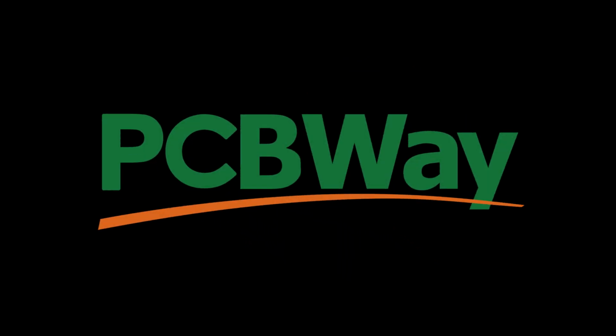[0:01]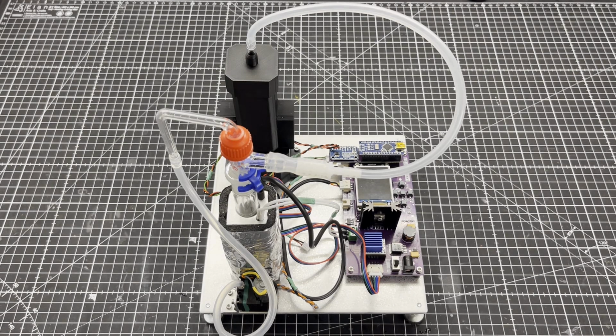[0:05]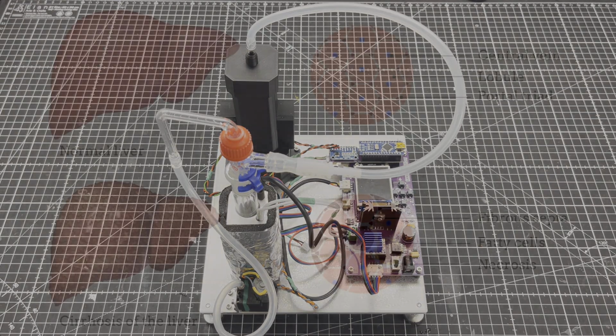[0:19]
And this is a fully automated microlab to determine the ammonia concentration in blood or urine. I built it because my blood has to be tested regularly for ammonia. The reason for this is that I suffer from cirrhosis of the liver. My health insurance only pays for the ammonia test once a year, which is far too little. I can't change my health insurance either, as no other insurance company would accept me with my medical conditions.
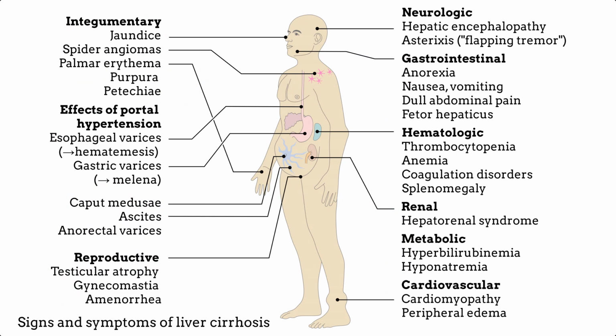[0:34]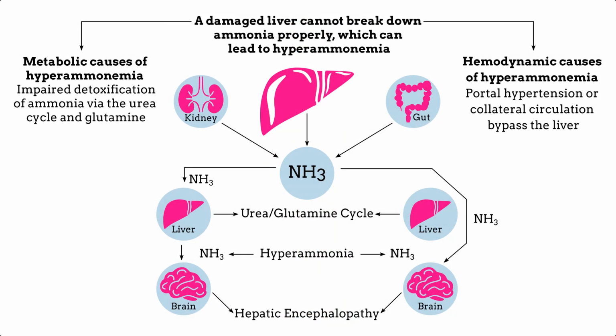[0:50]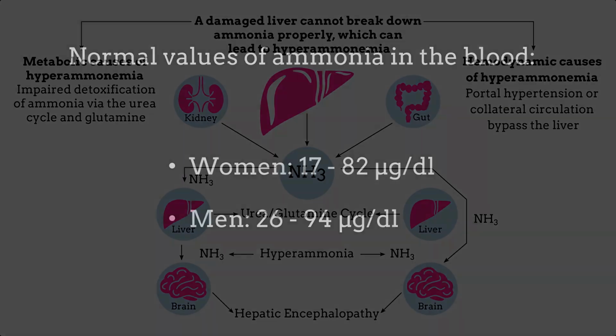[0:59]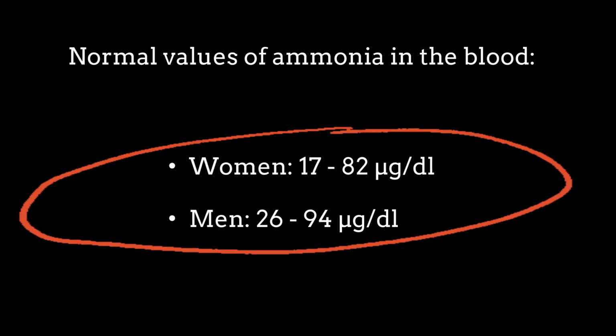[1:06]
Liver cirrhosis causes many symptoms, but the most acute for me is hepatic encephalopathy, also known as liver brain disorder. It's a potentially irreversible brain dysfunction caused by an insufficient detoxification function of the liver. In other words, with liver cirrhosis, the human body becomes increasingly poisoned with ammonia, a highly toxic cell toxin. Ammonia is also always present in the blood of a healthy human body, although the concentration is much lower.
If the ammonia content of the urine is increased, the reason may be liver damage, but it may also be an indication of a kidney damage or a bacterial urinary tract infection.
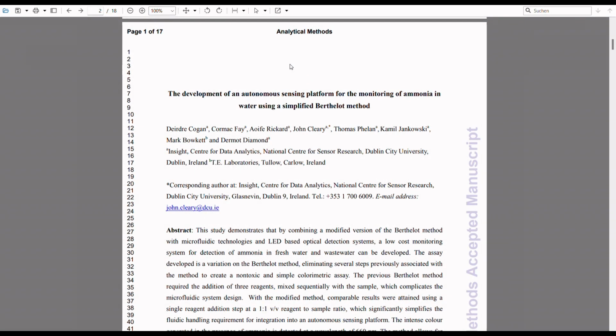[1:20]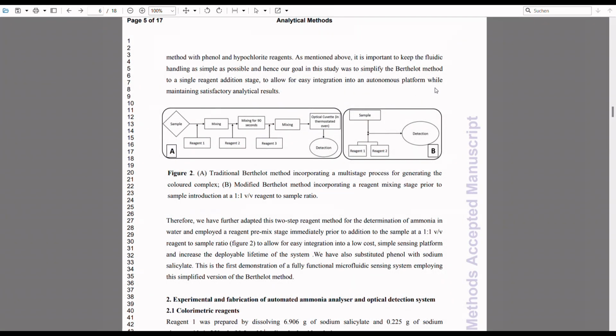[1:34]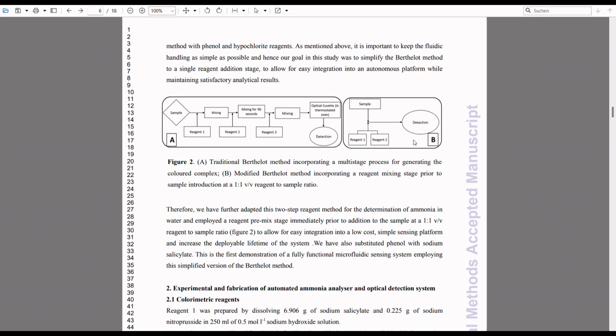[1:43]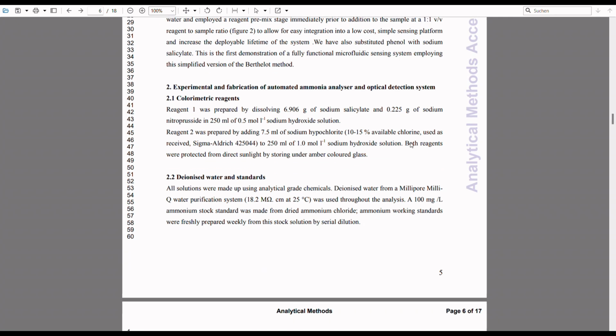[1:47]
The first thing I did was look around for a highly sensitive colorimetric reagent for ammonia and came across the Berthelot method. This publicly available paper was extremely helpful. In the paper, sodium salicylate is used as the phenol source instead of the highly toxic phenol itself, and the Berthelot reagent consists only of two reagents instead of three, which are simply mixed in a 1-to-1 ratio before use.
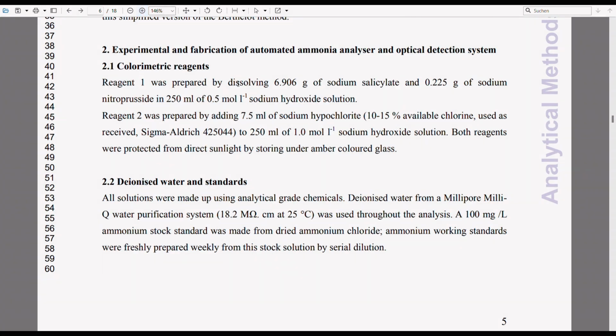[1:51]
The reaction mechanism of the Berthelot's reagent as prepared in the paper looks like this. I will refrain from a detailed description of the mechanism here and refer to the paper. However, another important hint emerged from the paper, namely that the absorption maximum is at 660 nanometers, arising from the use of salicylate rather than phenol.
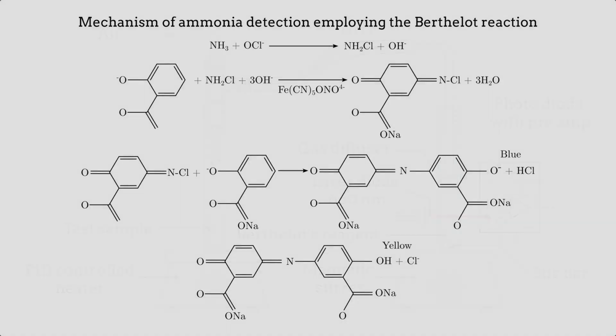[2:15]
Once all that was sorted out, I drew a sketch of the general structure of the microlab. You can see here that the ammonia is expelled from the test sample using mild heat, and that the test sample does not come in direct contact with the Berthelot's reagent. This is important because the Berthelot's reagent is also very sensitive to urea, which is always present in both urine and blood.
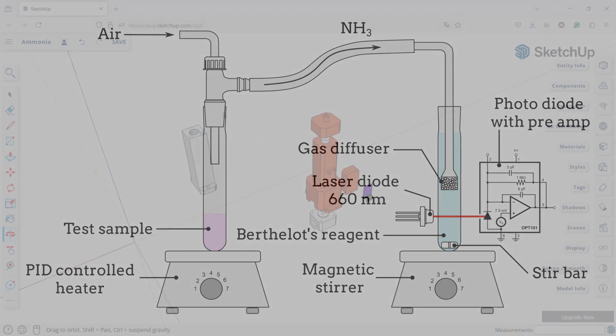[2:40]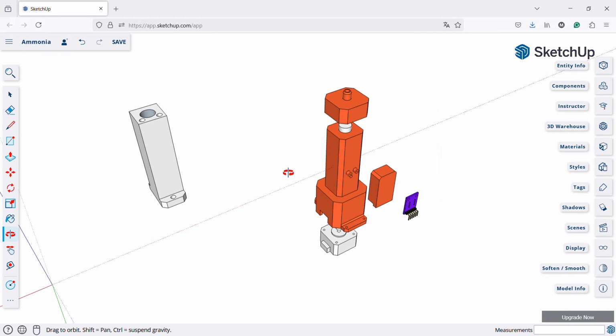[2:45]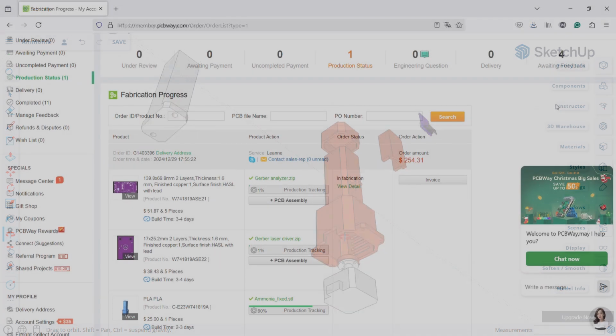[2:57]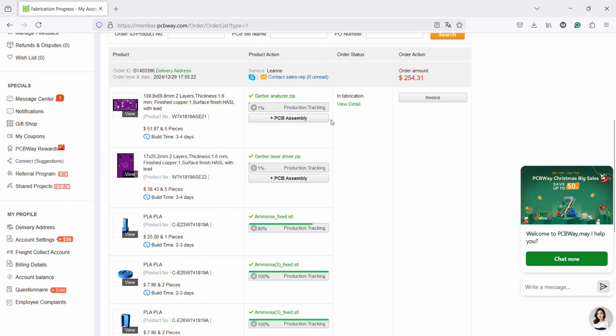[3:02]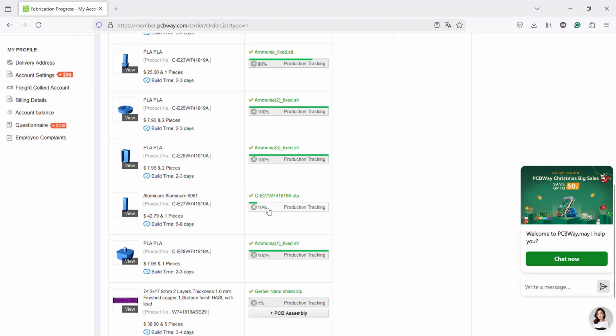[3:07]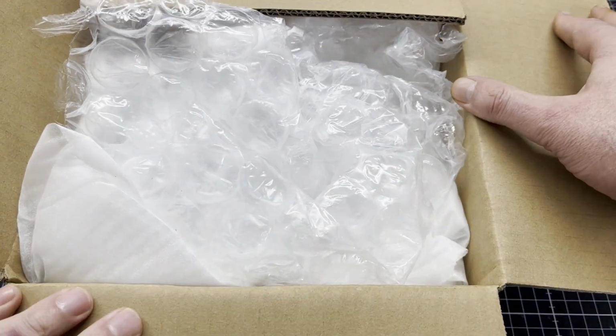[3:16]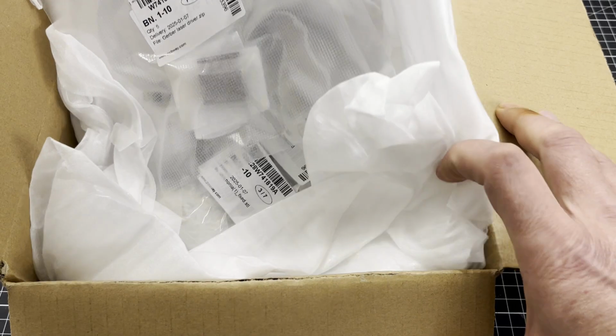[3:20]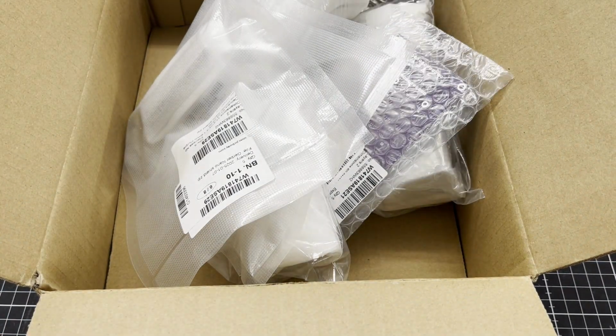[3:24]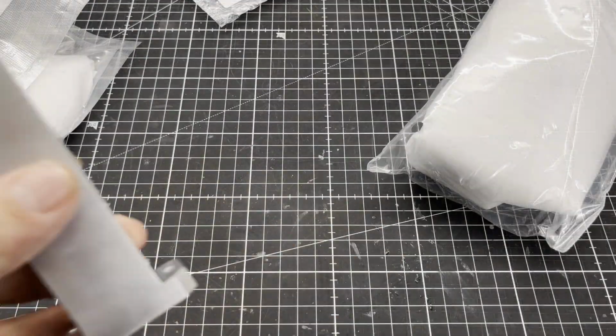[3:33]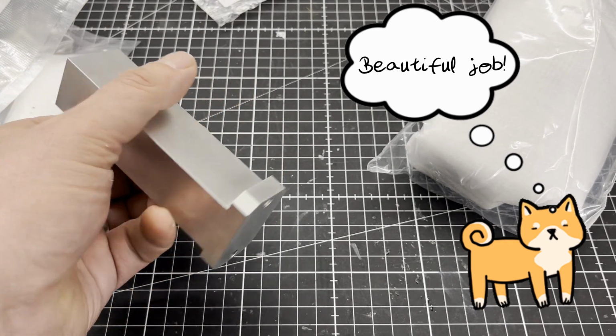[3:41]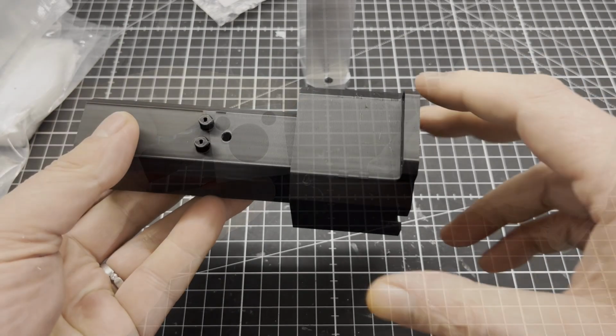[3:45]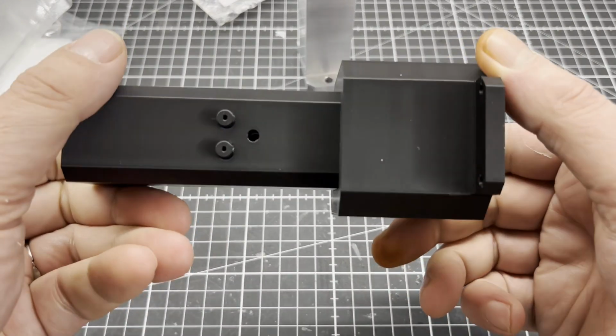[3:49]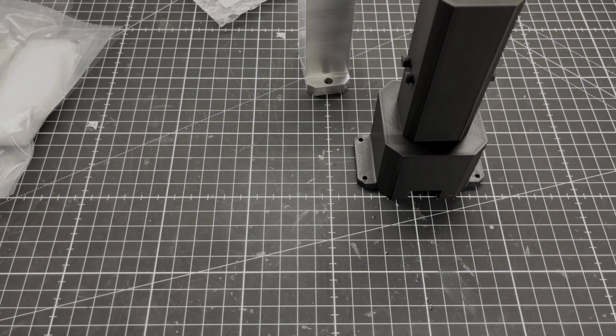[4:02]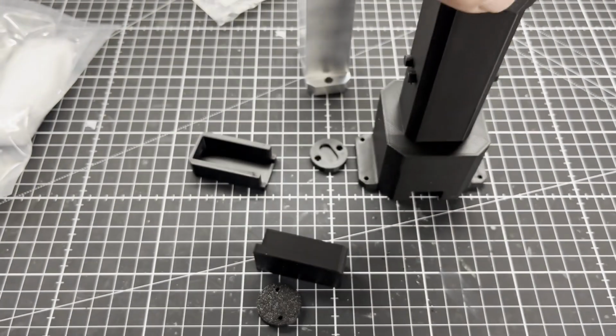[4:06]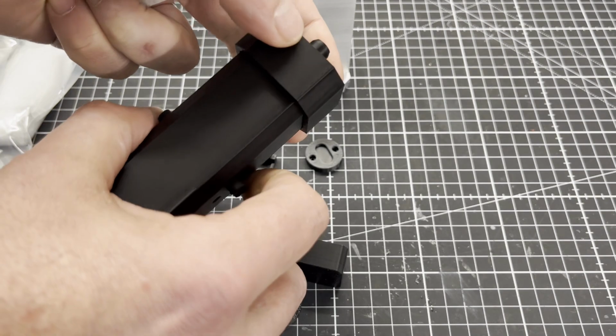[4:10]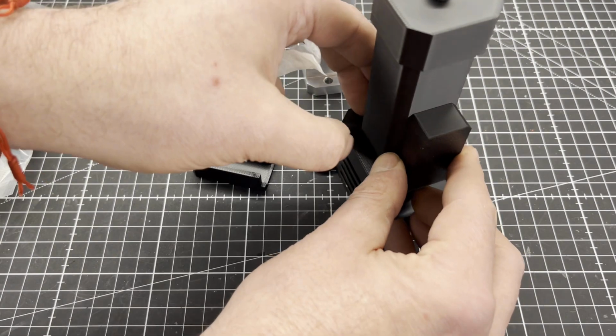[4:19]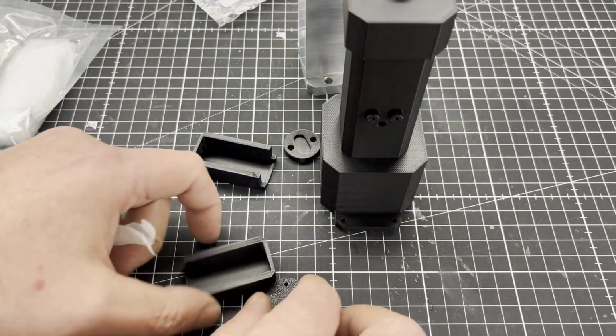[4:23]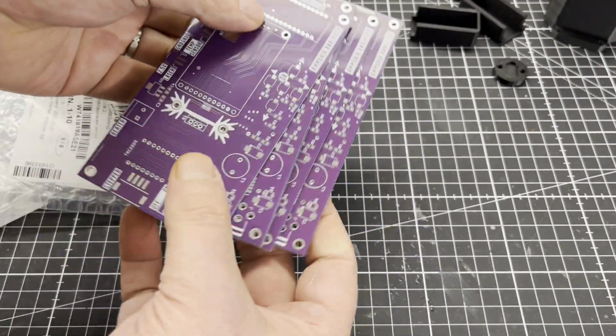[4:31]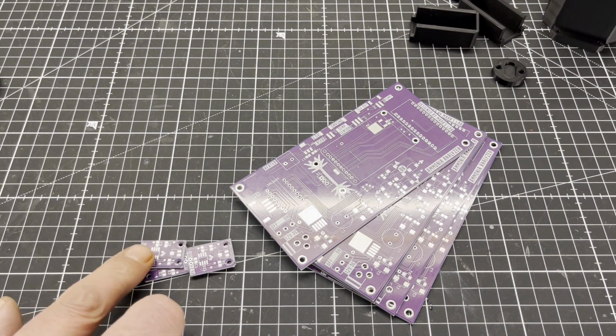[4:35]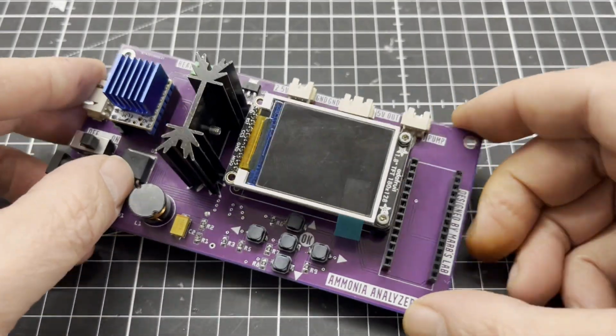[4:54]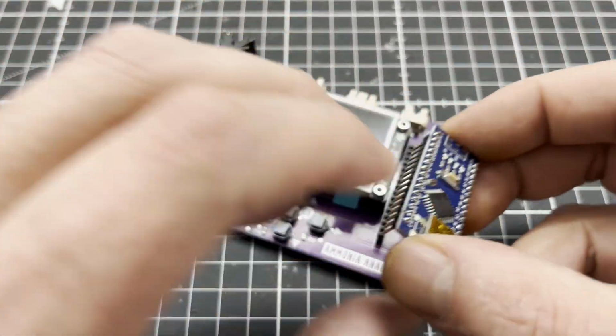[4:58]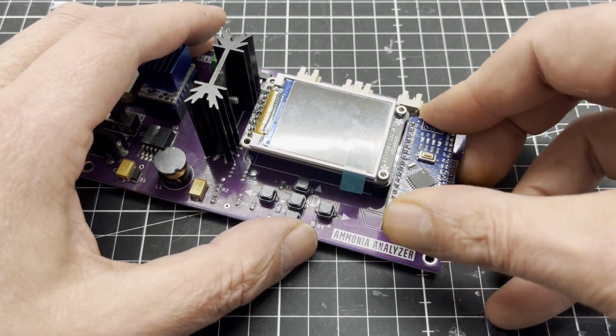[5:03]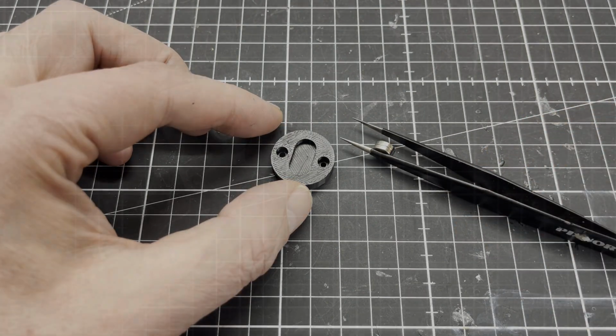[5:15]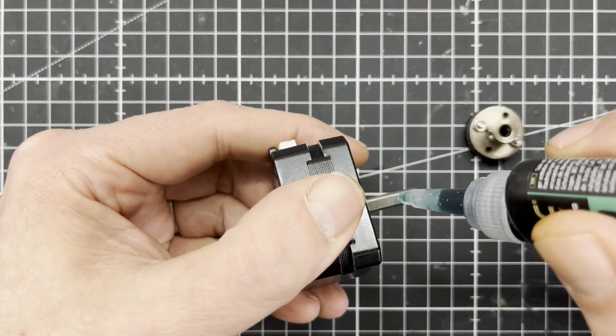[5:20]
Here you can see the finished main controller of the microlab. The brain of the controller is a cheap Arduino Nano clone. The magnetic stirrer essentially consists of a 3D printed part and two neodymium magnets. I decided to use a stepper motor to drive the magnetic stirrer.
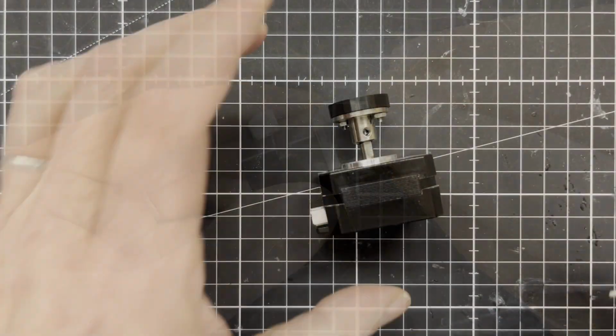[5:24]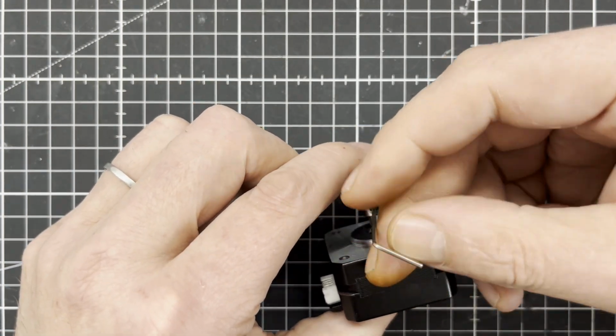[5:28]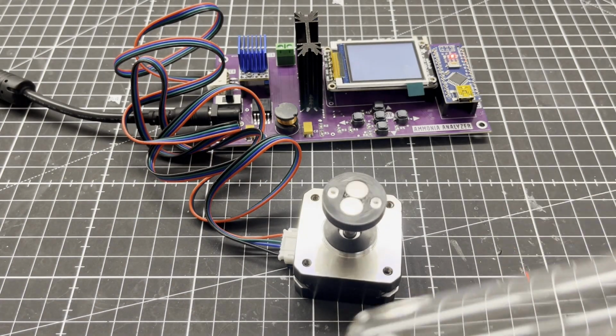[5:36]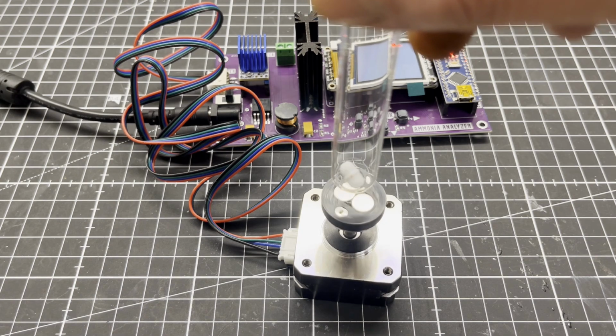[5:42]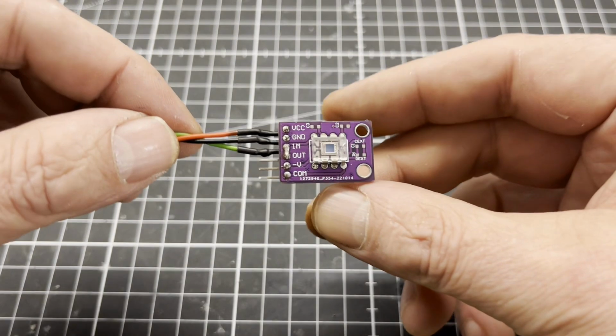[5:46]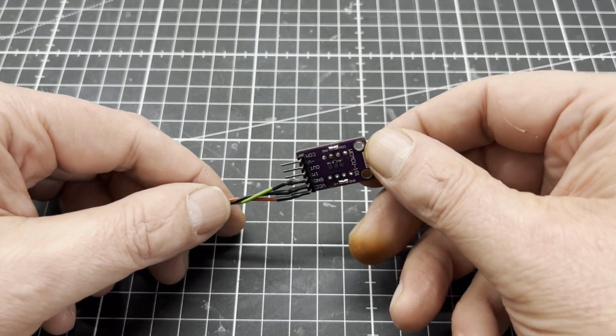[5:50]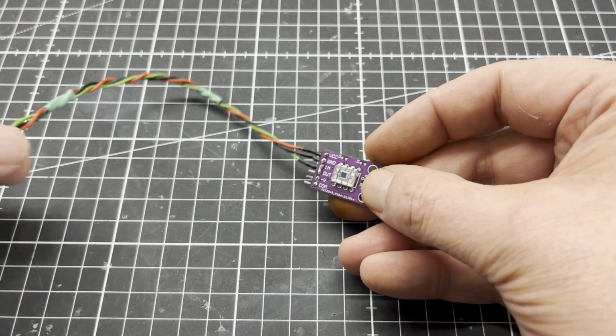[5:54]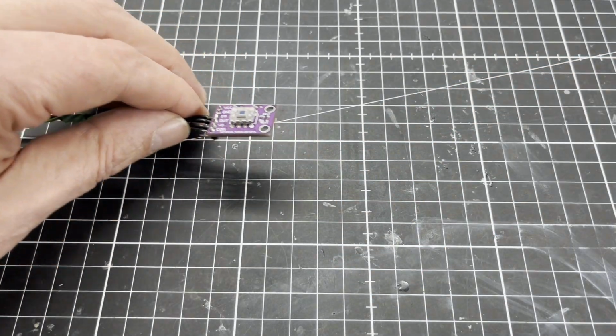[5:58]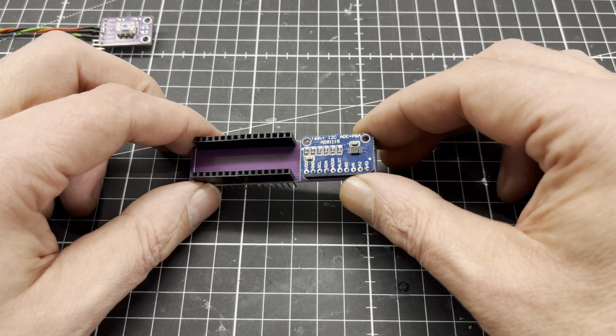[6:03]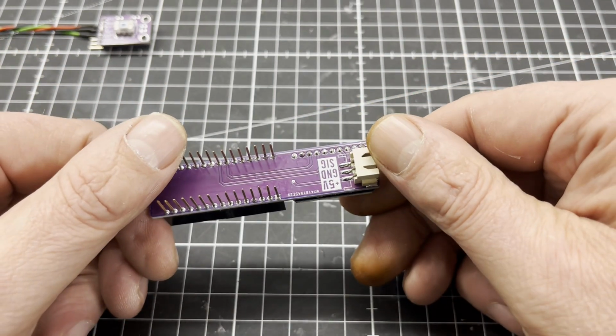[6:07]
The photodiode I use is the OPT101, a monolithic photodiode with an on-chip transimpedance amplifier. Since the 10-bit resolution of the analog inputs of the microcontroller is too imprecise, I use the ADS1115 for the photodiode, which provides 16-bit precision at 860 samples per second over I2C.
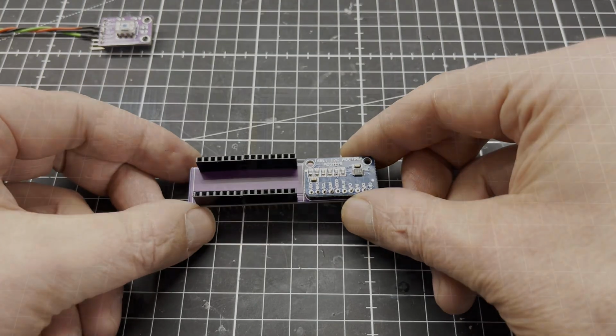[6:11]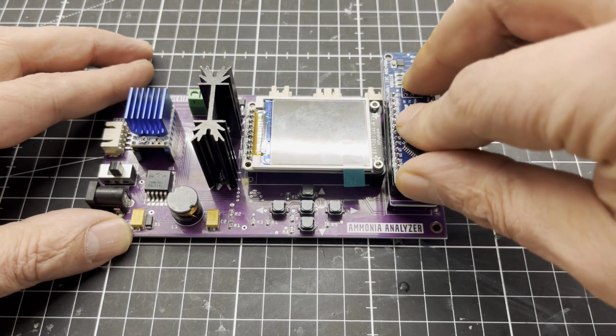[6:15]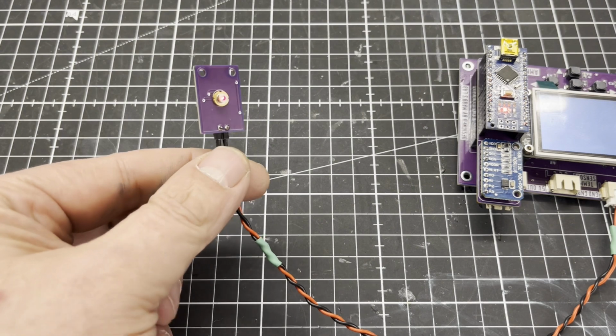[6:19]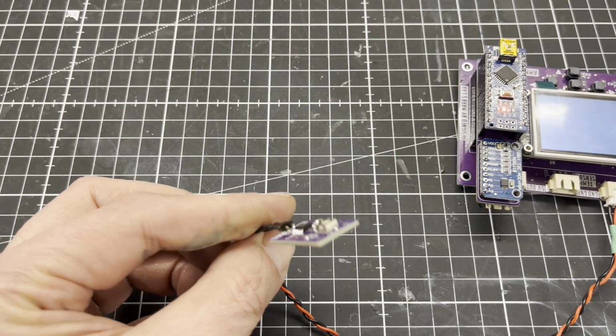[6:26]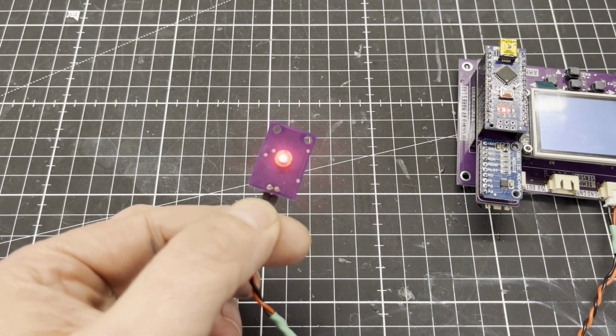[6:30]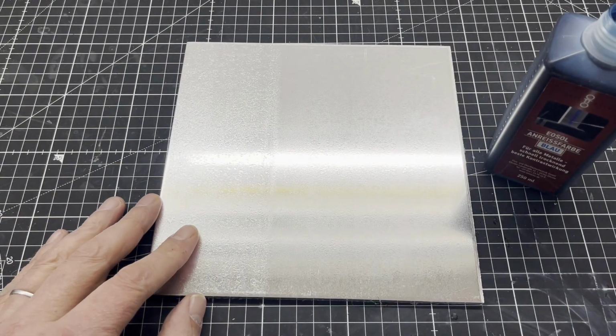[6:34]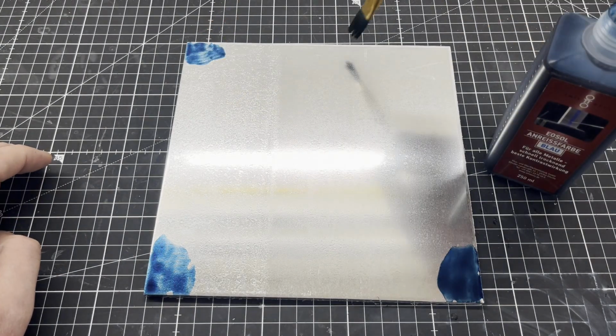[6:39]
Since I could not find an LED with 660 nanometers, I opted for a laser diode with the corresponding wavelength. The driver circuit of the laser diode is located on the backside of the customized PCB. An aluminium sheet with the dimensions 200 by 200 millimeters and a thickness of 5 millimeters was used as a base plate.
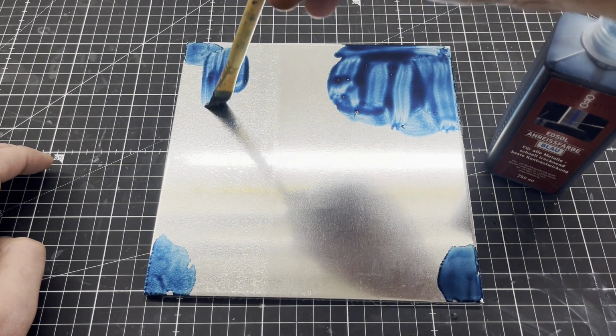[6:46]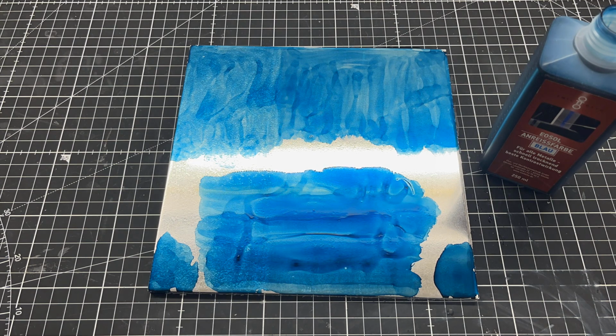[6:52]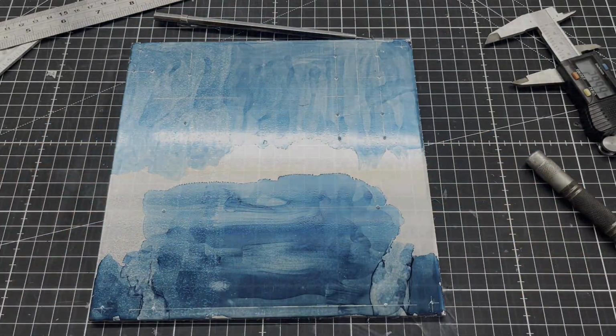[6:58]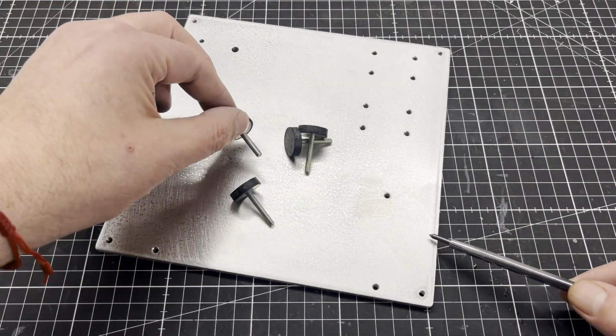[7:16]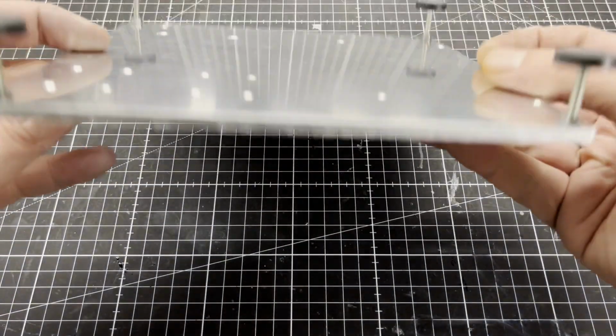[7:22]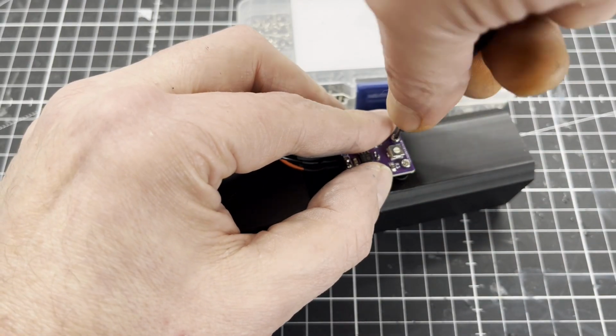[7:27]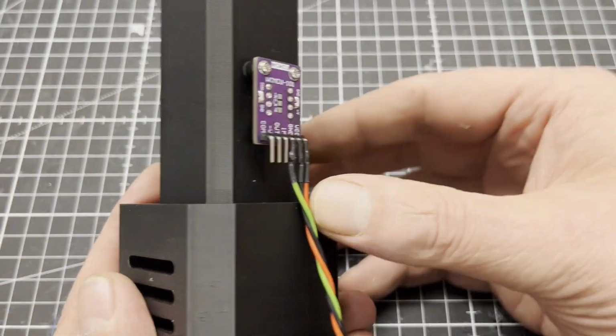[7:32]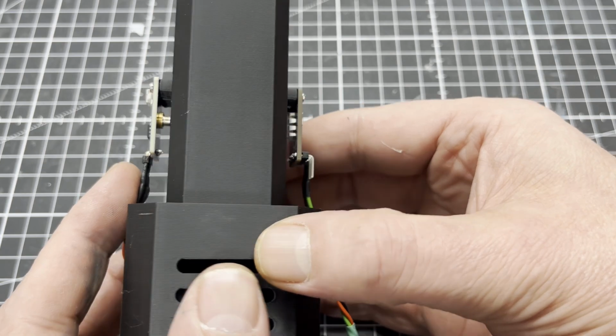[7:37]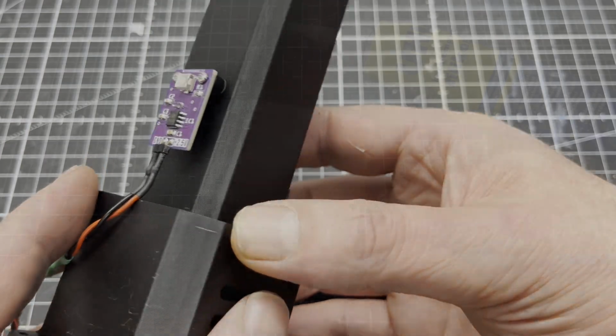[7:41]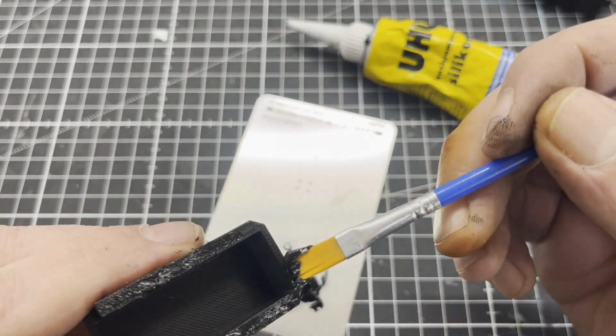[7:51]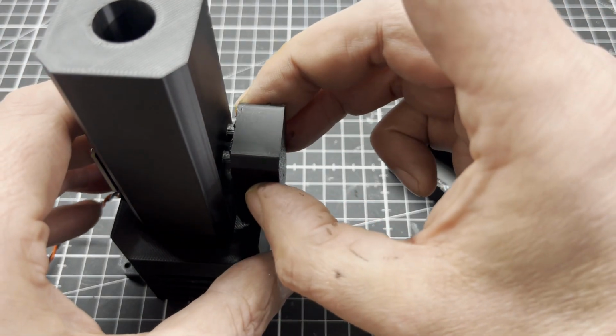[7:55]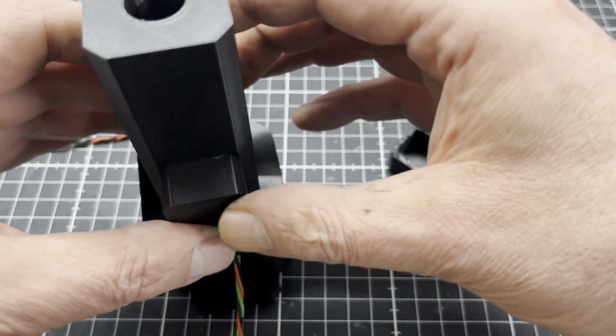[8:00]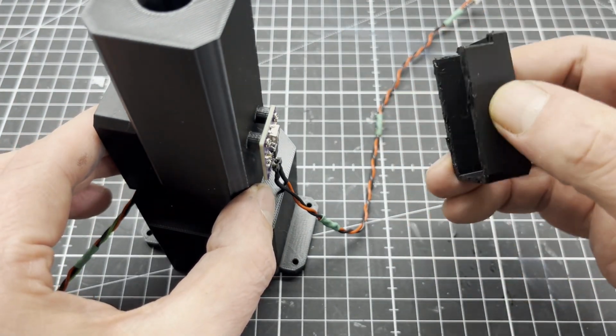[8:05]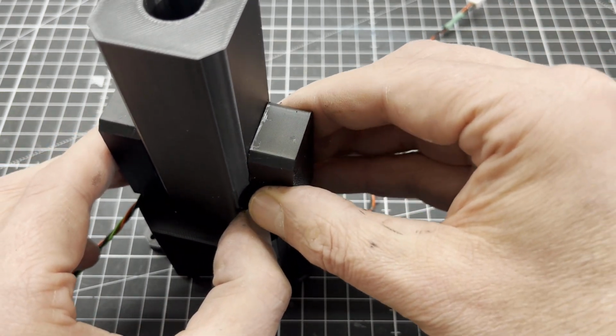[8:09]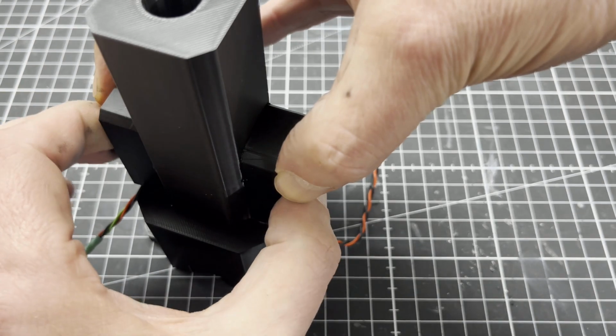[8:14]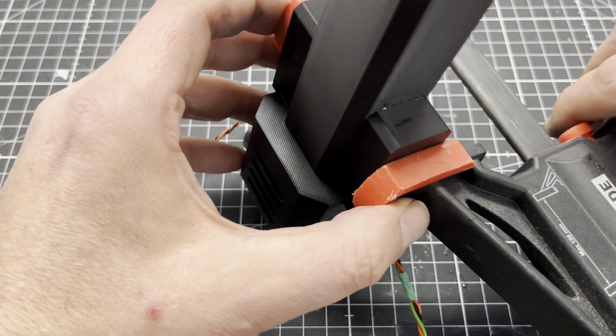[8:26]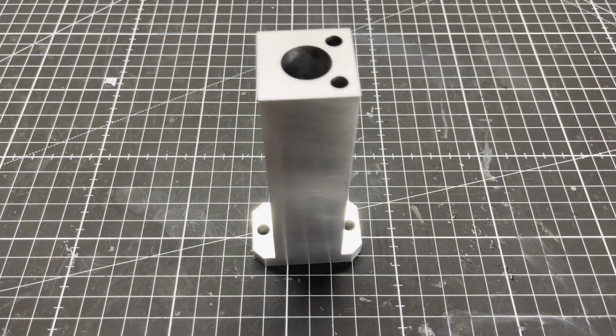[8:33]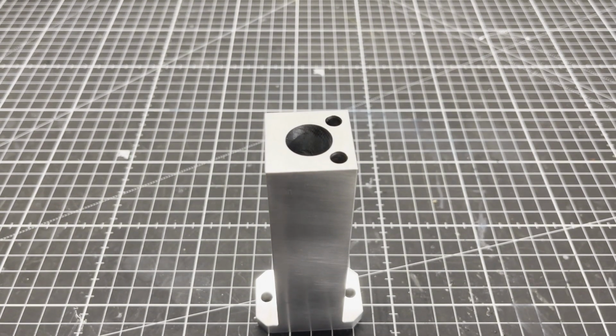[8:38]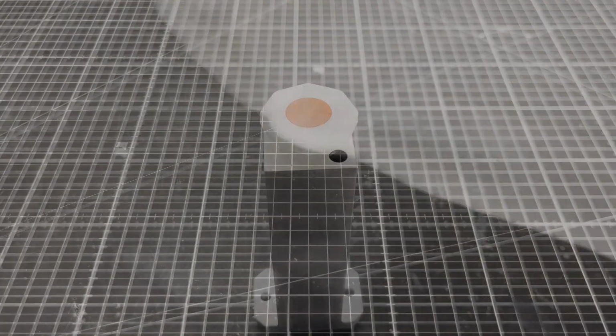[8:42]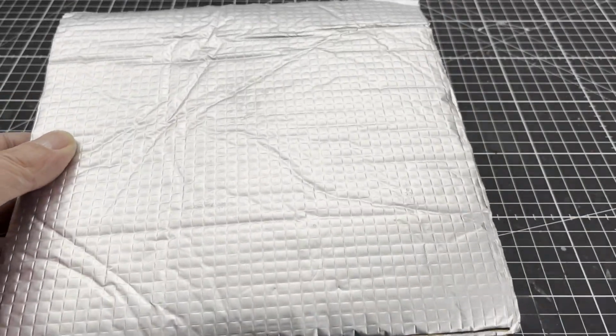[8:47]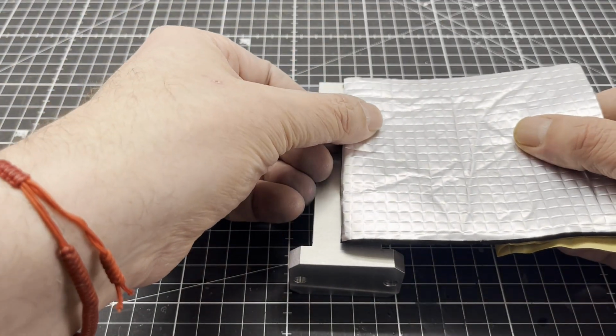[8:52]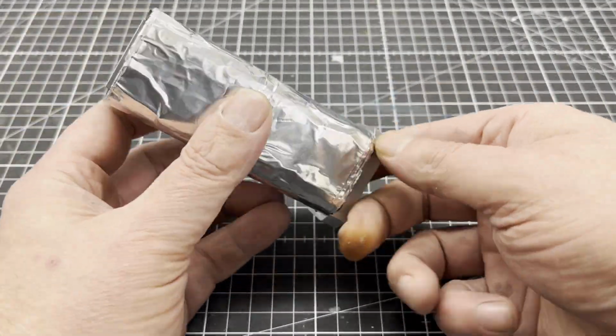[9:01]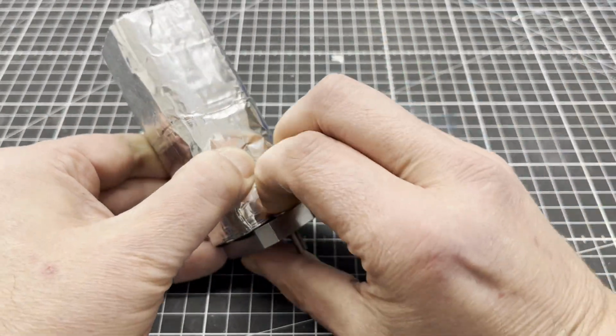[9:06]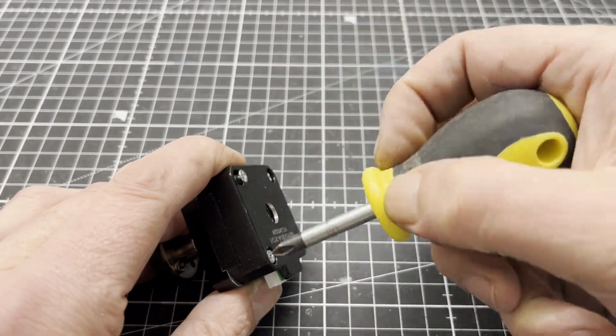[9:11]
In the next step, I assembled the laser photometer. I chose black silicone to attach the covers so that they can be removed again if necessary. The aluminium body of the heater has been beautifully CNC machined by PCBWay. Look at that! I utilized heating bed insulation for 3D printers to insulate the body of the heater. Now all components could be screwed to the base plate.
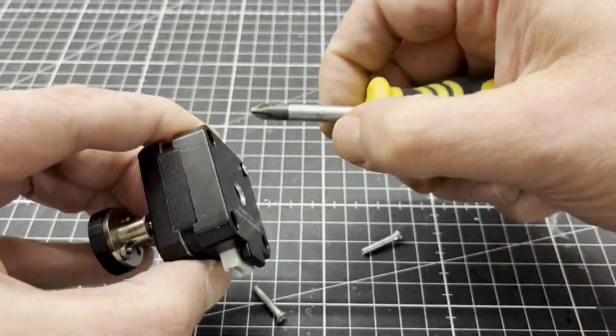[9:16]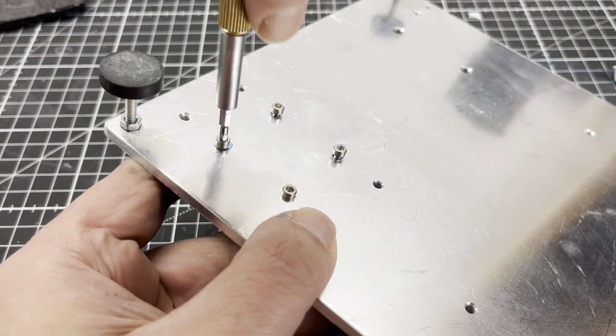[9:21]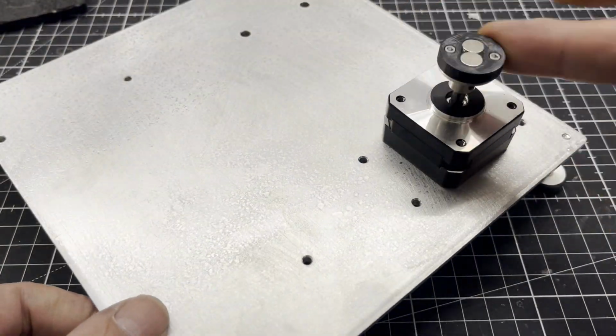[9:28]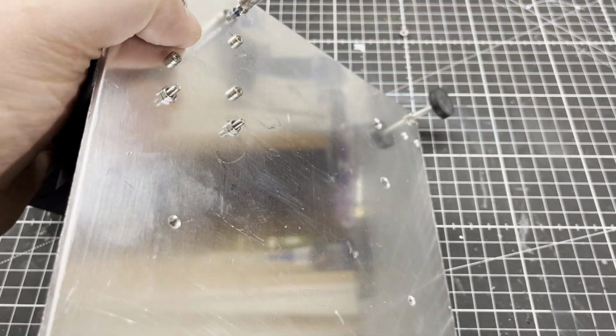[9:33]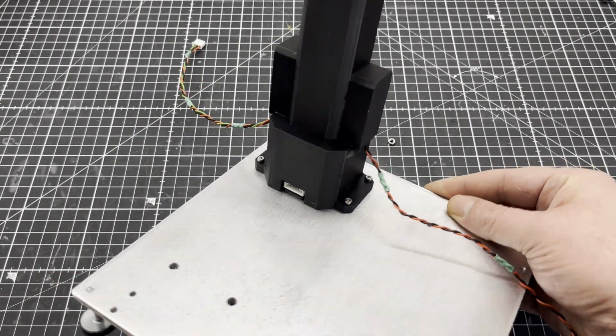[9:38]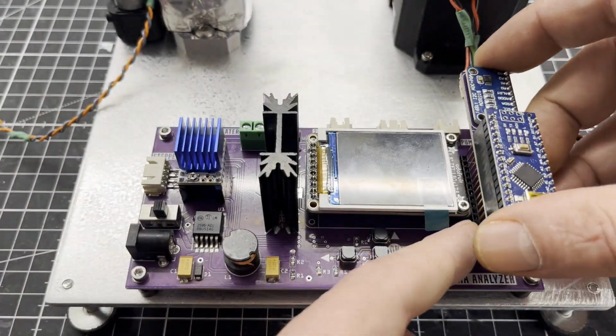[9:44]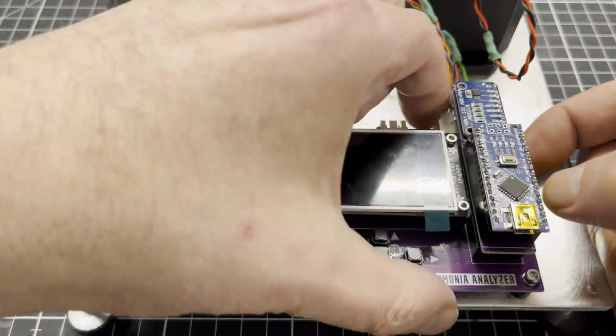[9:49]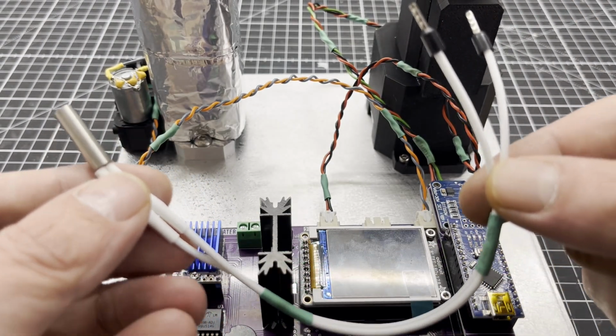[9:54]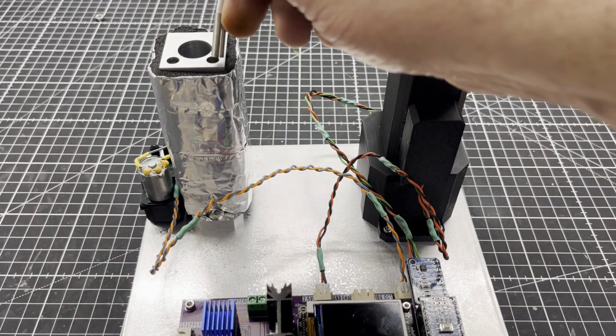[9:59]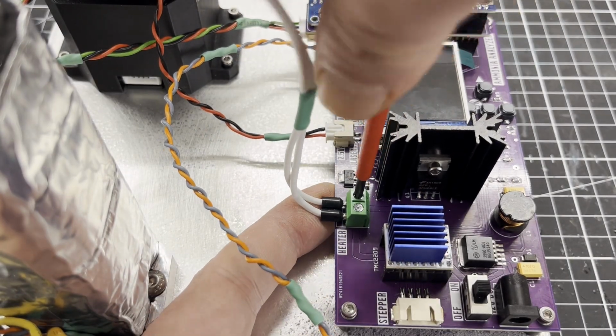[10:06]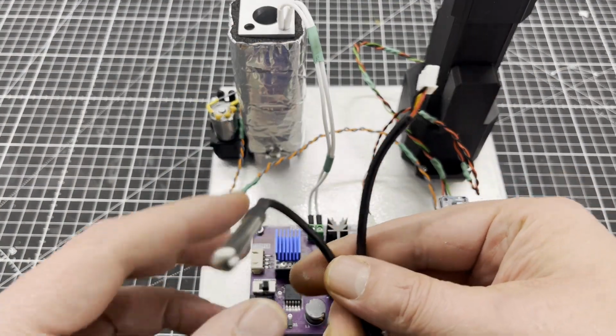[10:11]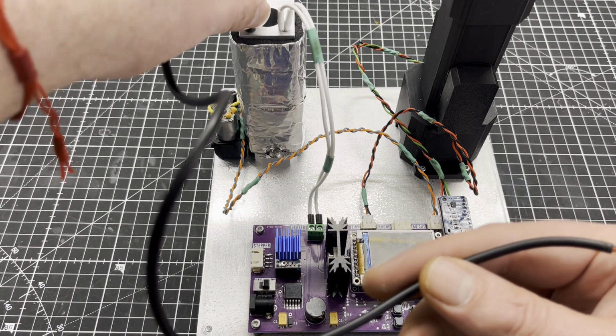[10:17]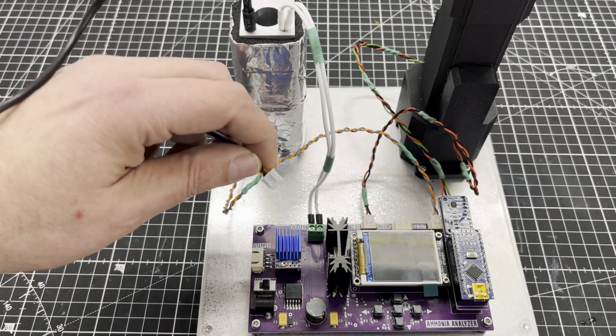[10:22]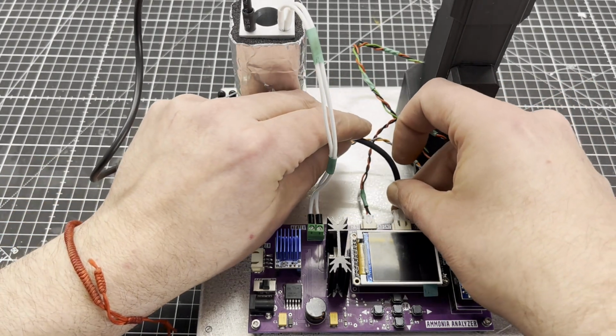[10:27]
A 12 volts 70 watts cartridge heater for the hot end of a 3D printer is employed as a heating element. An LM35 is used as a temperature sensor. It requires no additional hardware and can be read out directly with an Arduino. The sensor has an accuracy of plus minus 1 degree Celsius over the entire measuring range. The temperature of the heater is controlled by a PID algorithm.
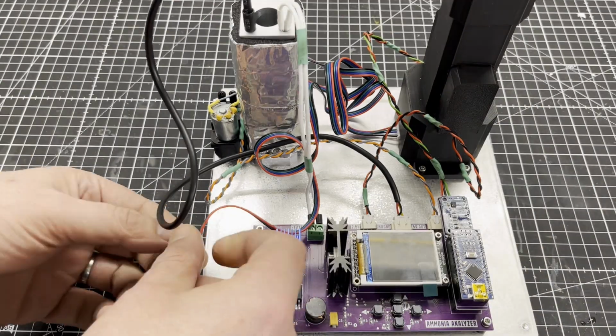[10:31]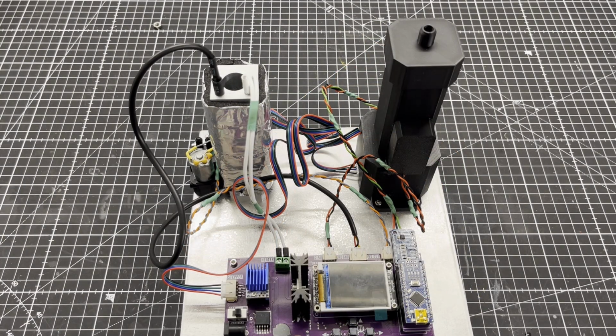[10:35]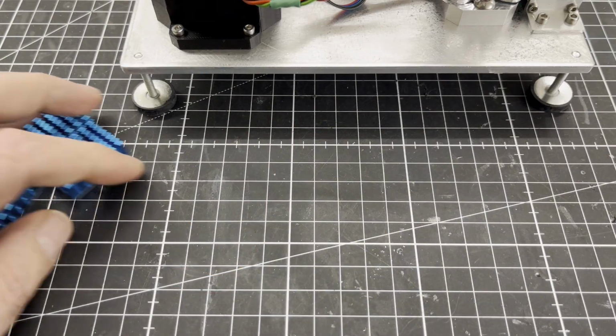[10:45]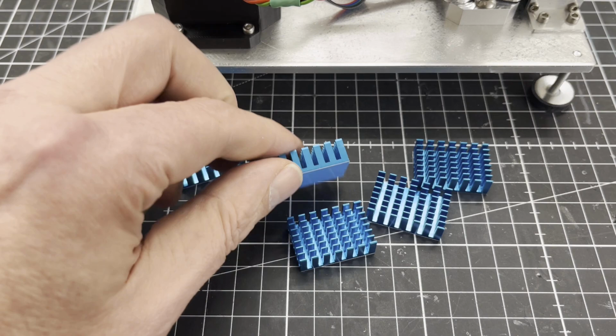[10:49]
Next to the heater you can see a small air pump. It provides the air supply and can be controlled via PWM. I then attached heat sinks to the bottom of the base plate under the heater to prevent the base plate from heating up too much.
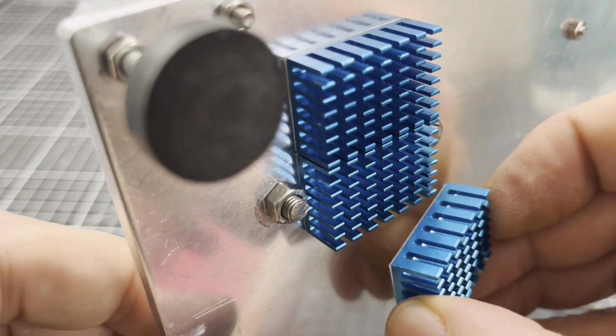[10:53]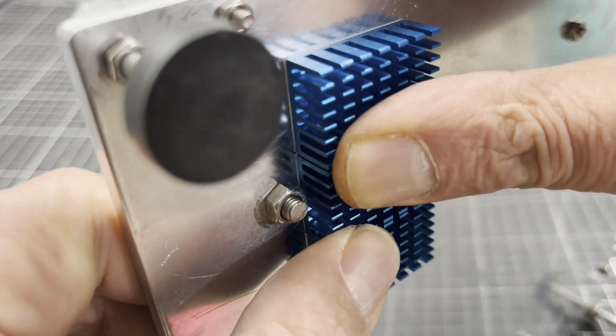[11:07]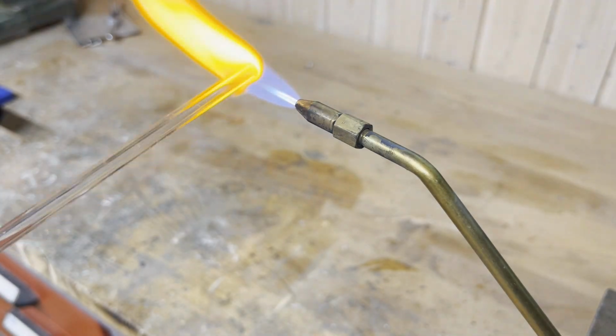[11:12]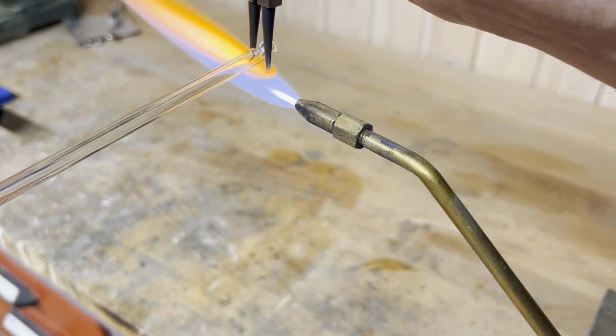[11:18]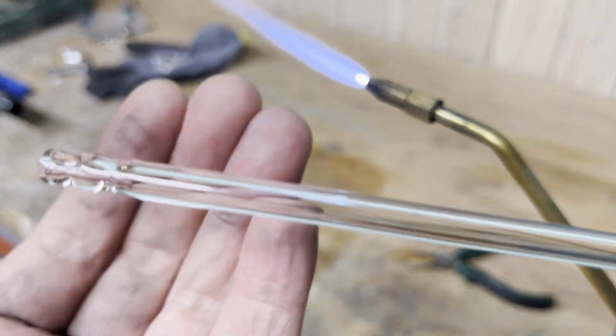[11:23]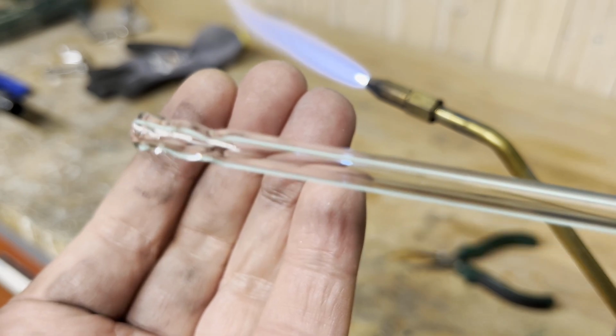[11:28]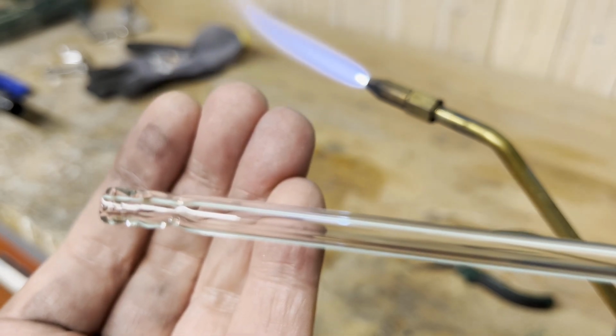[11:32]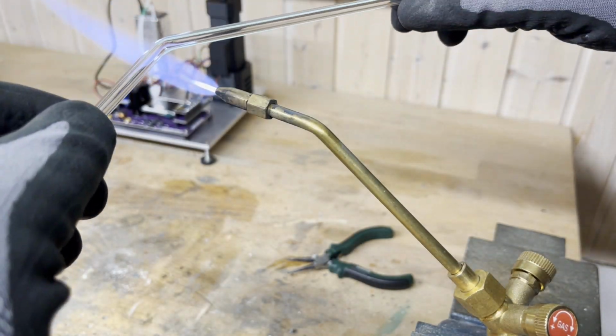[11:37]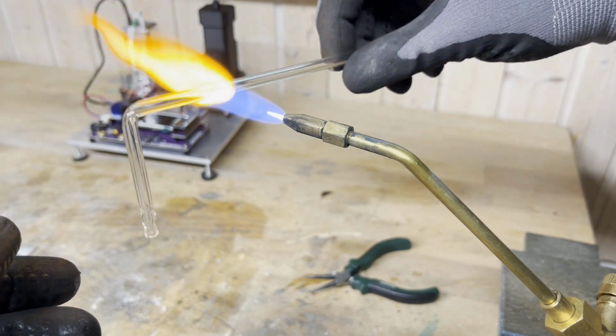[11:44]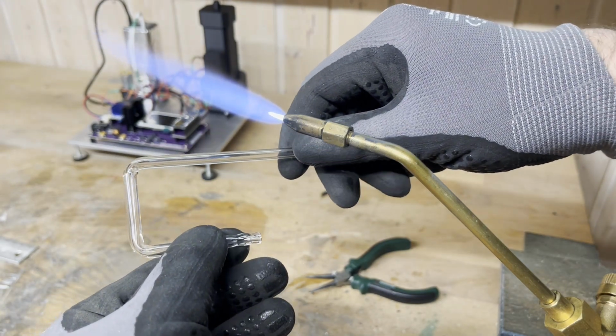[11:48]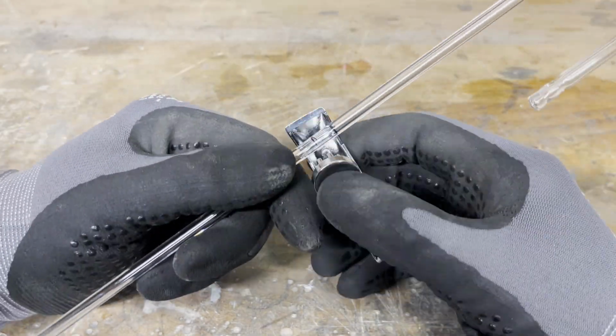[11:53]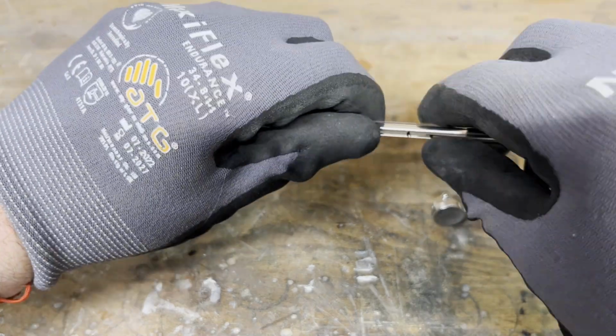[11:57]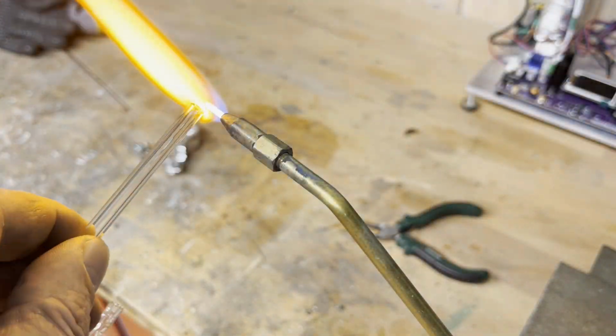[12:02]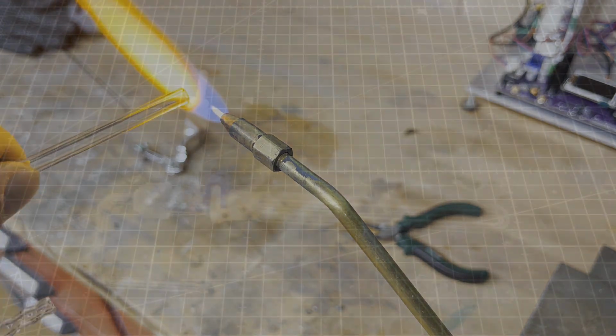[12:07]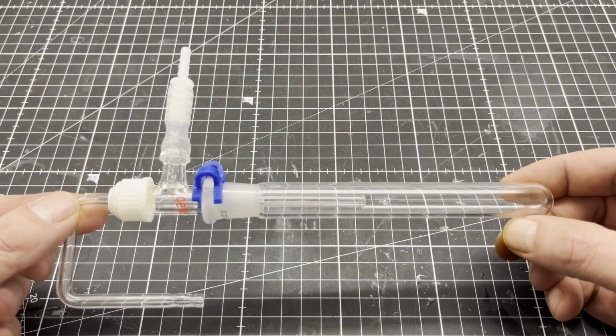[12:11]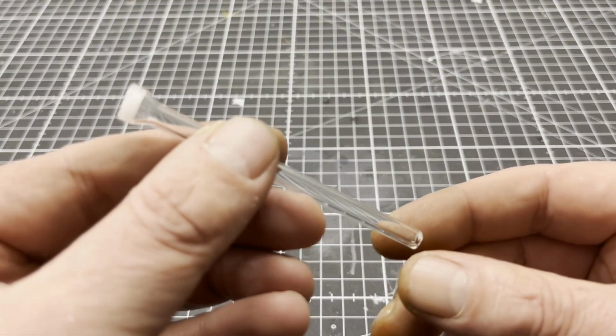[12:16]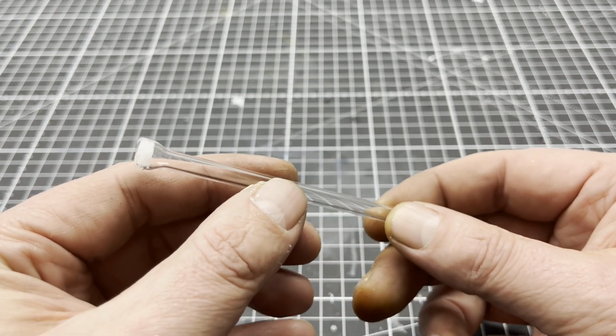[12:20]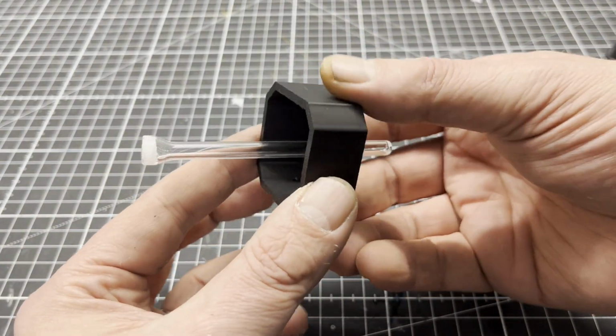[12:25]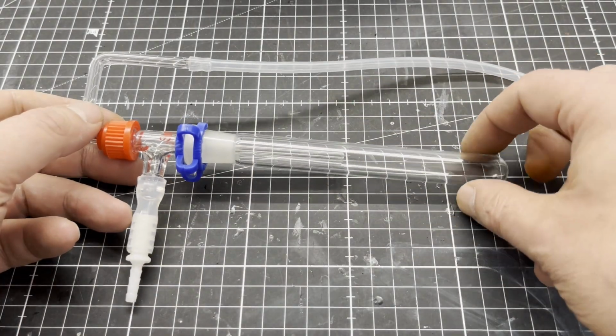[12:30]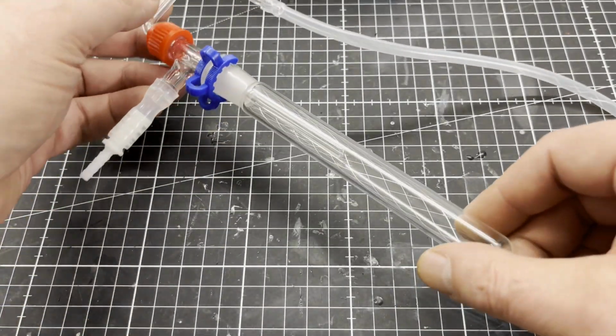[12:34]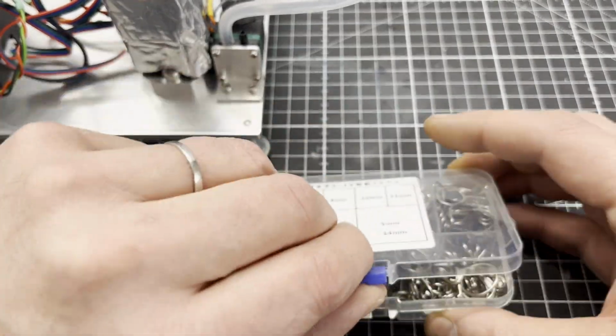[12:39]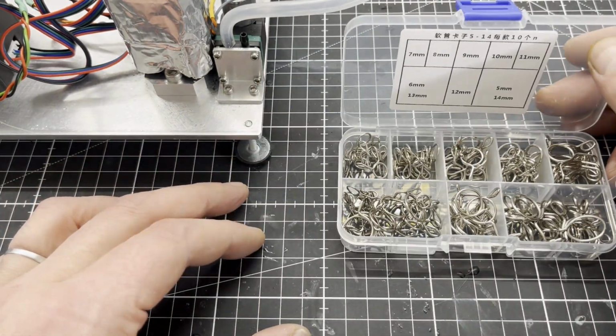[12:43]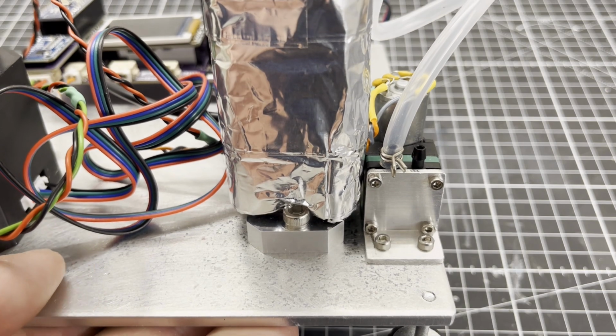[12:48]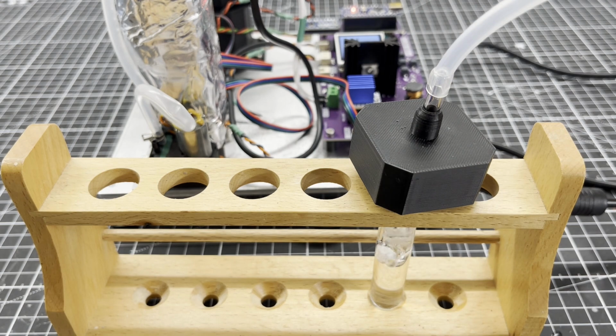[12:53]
Next, I started making the glassware. Here you can see the finished glass apparatus for the test sample. The gas diffuser was obtained from a small gas washing bottle with a fritted disc. Here I demonstrate how the gas diffuser works.
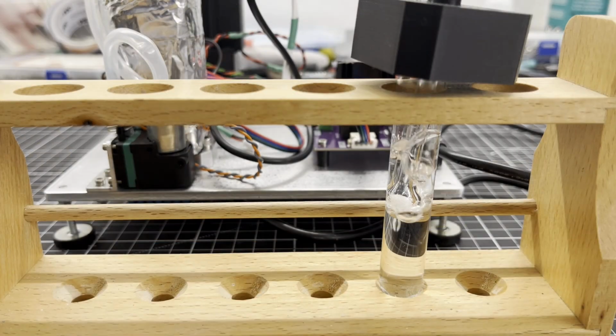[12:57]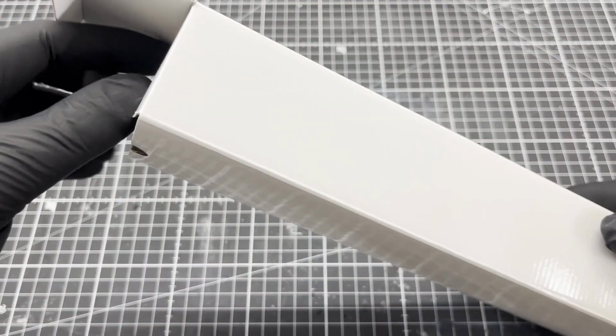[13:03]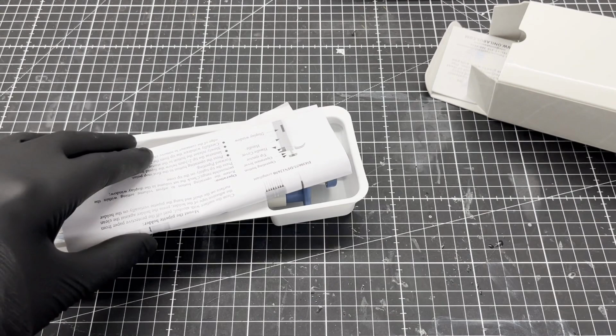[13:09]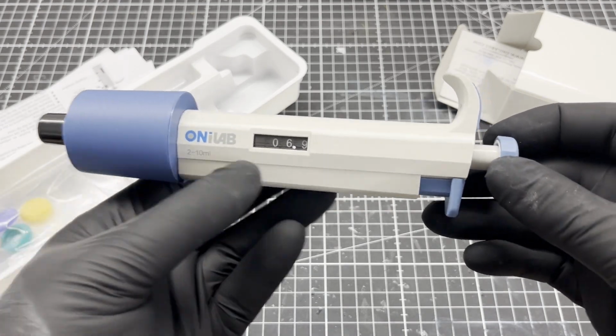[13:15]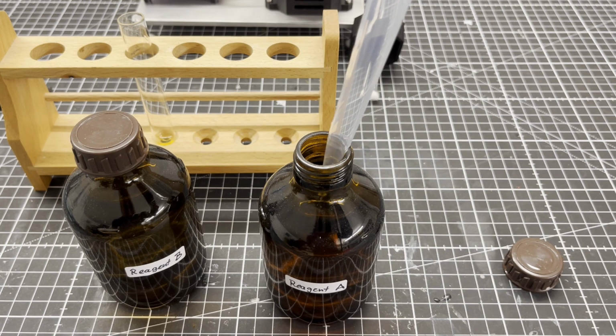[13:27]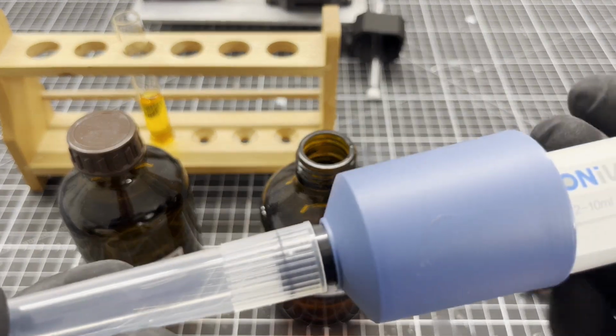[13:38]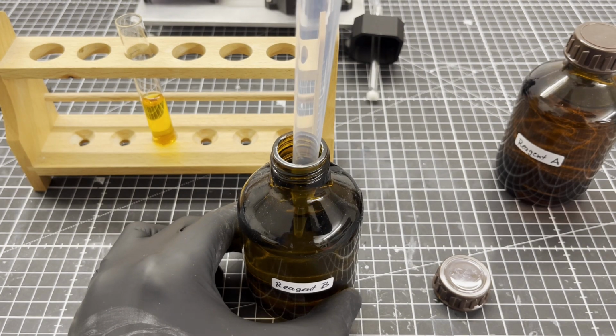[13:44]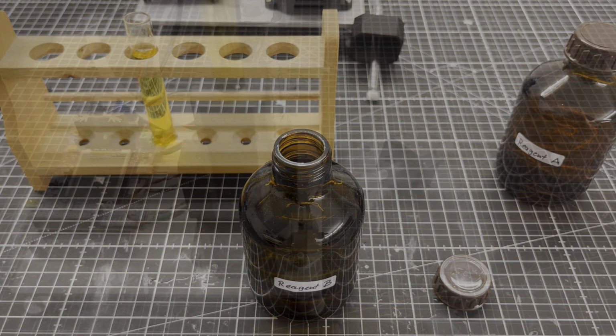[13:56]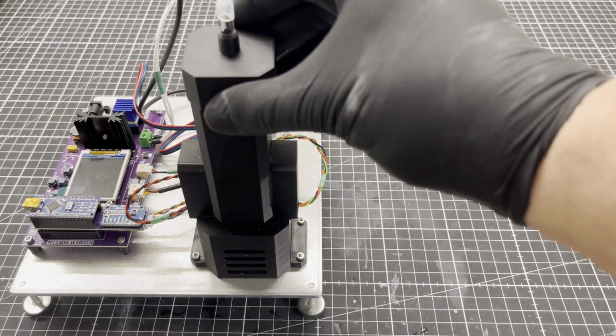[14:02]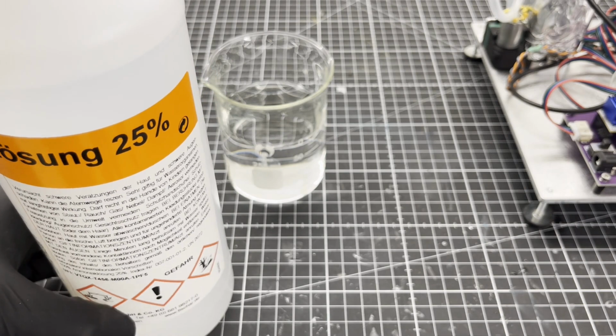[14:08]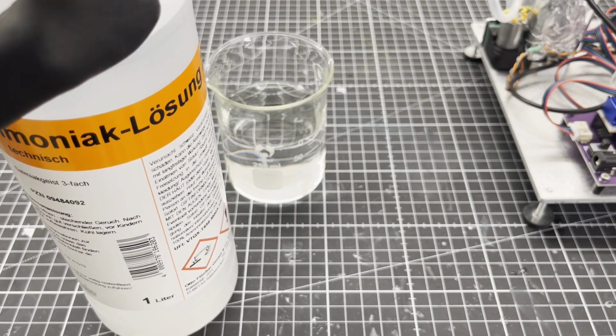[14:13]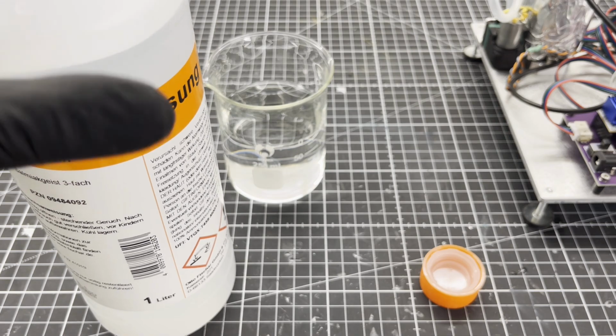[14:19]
After I had written a corresponding program for the microcontroller, it was time for a first test. The test should only determine whether the microlab is able to measure the concentrations of ammonia found in blood. I used a fresh container of 25% ammonia solution to prepare the test sample. A 25% ammonia solution means that 25 grams of ammonia is dissolved in 100 milliliters of the solution. One drop of the ammonia solution was then added to 200 milliliters of distilled water. This corresponds approximately to a concentration of 60 milligrams per liter.
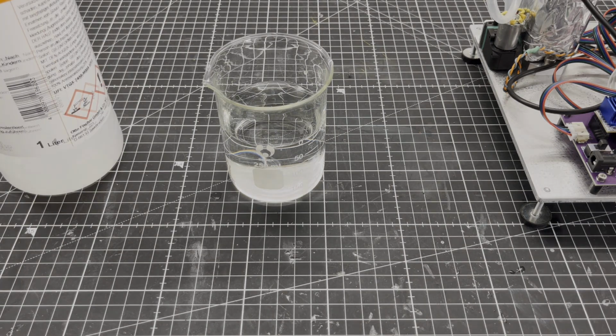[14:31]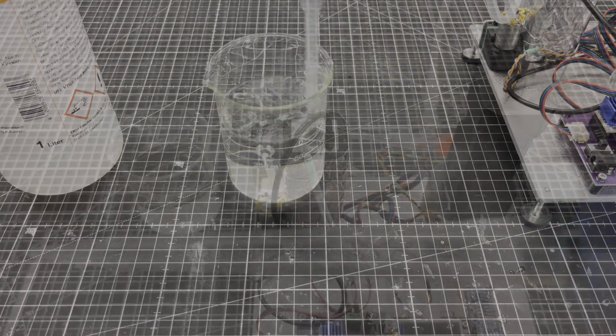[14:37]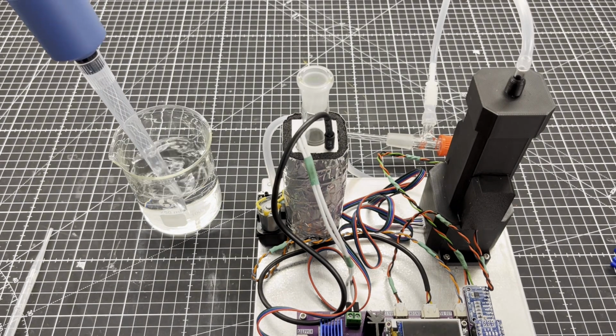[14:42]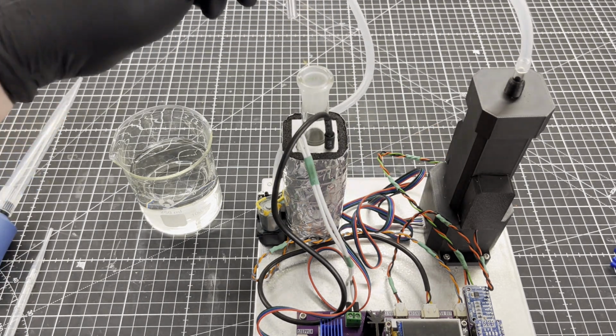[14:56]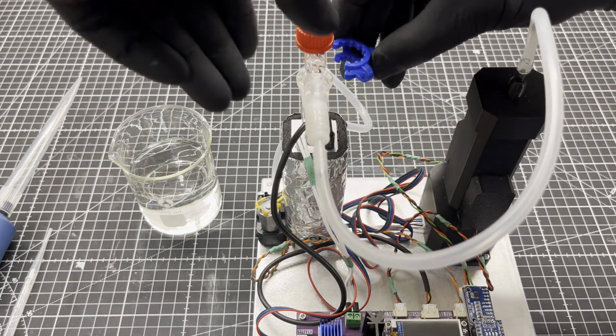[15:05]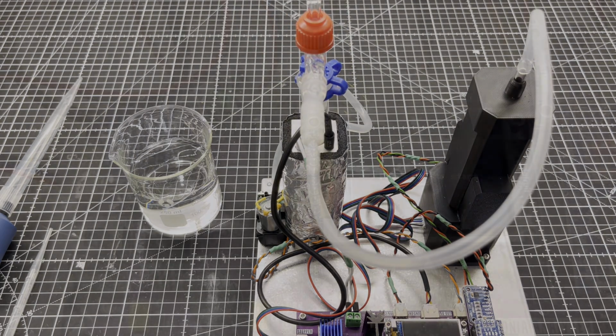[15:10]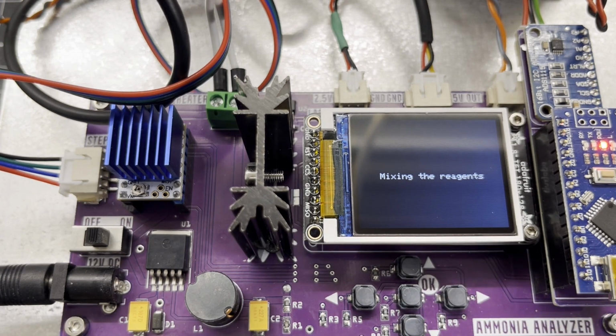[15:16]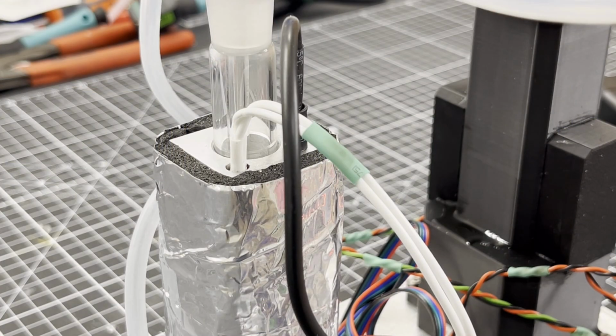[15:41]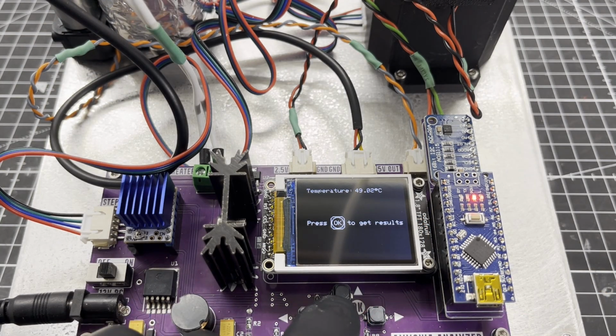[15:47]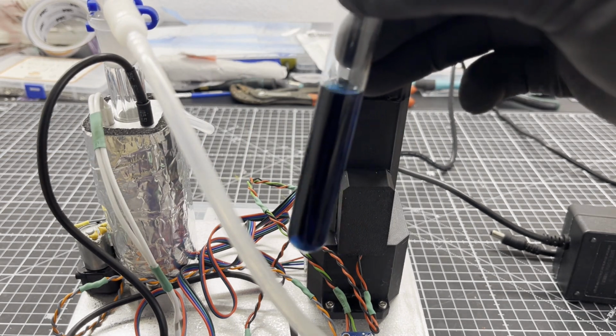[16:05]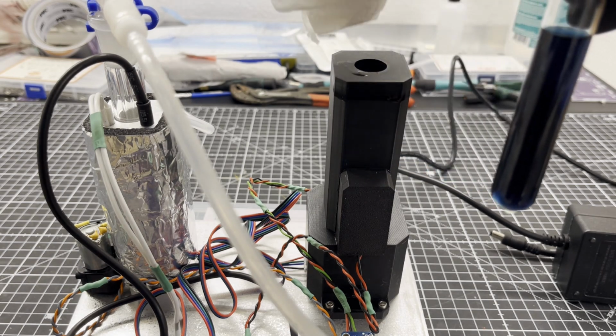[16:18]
As you can see, the transmittance of the Berthelot reagent is almost zero at the end of the test, so I had used far too much ammonia. That means that it is feasible to determine the ammonia content in urine and blood with my microlab. Of course, the test depends on many parameters, such as temperature and volume of the test sample, airflow, test duration, etc.
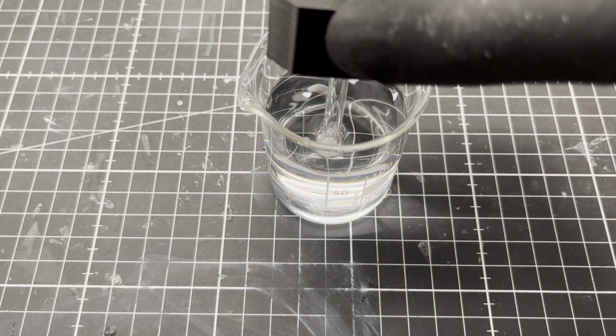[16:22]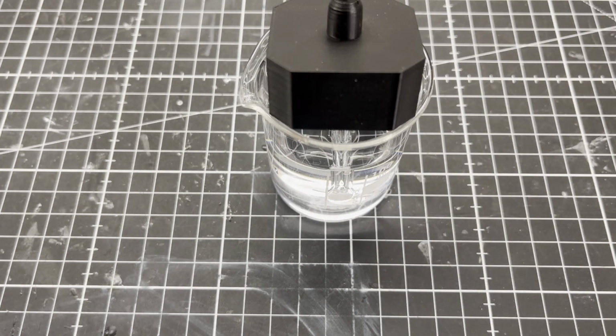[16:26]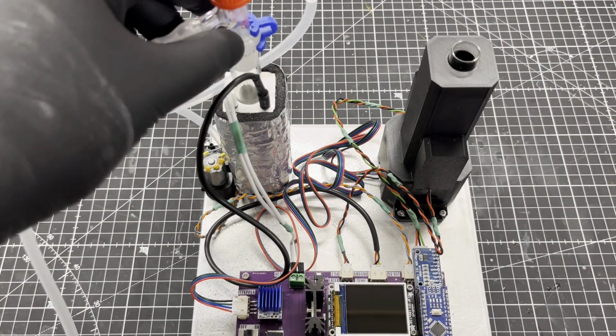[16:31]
Over the next few weeks, I will have to carry out many tests with different concentrations in order to calculate a mathematical function using the data, which then outputs the concentration depending on the transmittance.
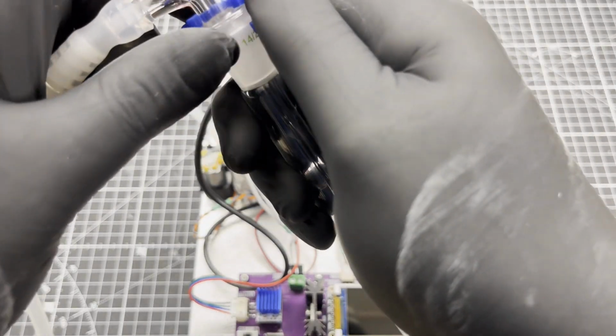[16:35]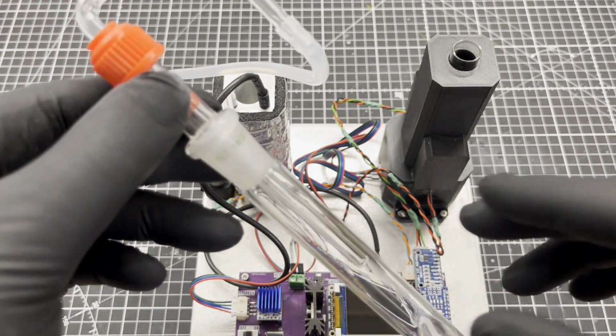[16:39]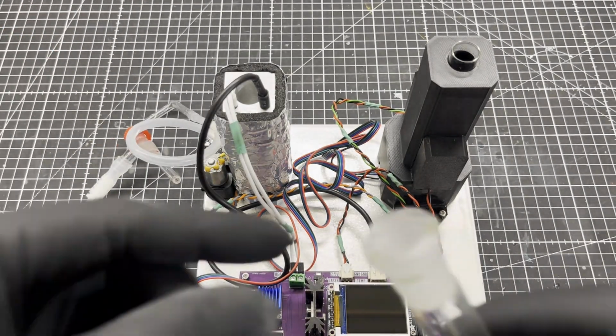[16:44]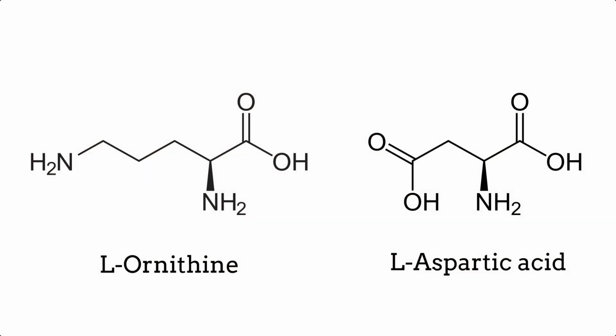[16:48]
What we haven't talked about yet is the question of how to reduce the ammonia concentration in the blood. To my knowledge, there is currently only one drug on the market for the treatment of symptoms of hepatic encephalopathy, which is based on L-ornithine L-aspartate. However, this drug had no significant effects on me. I will therefore have to carry out intensive research into this if I want to stay alive a little longer.